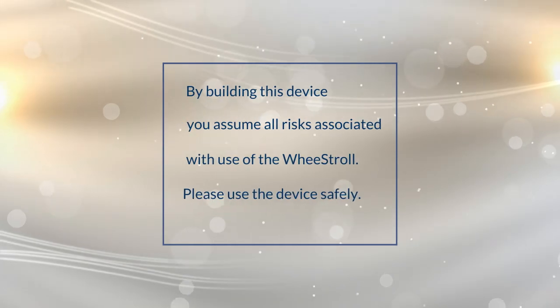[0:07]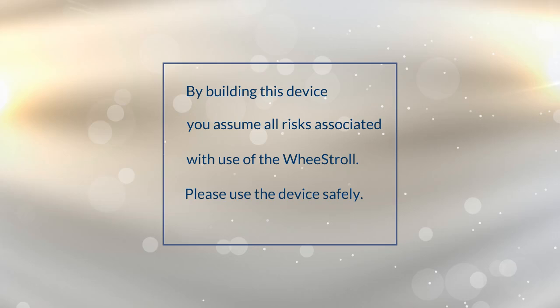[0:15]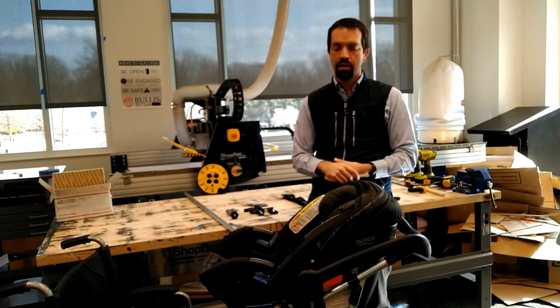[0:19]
Hi there. In this video, I'm going to show you how to build one of these. This is a wheelchair stroller adapter that I designed and built with my students.
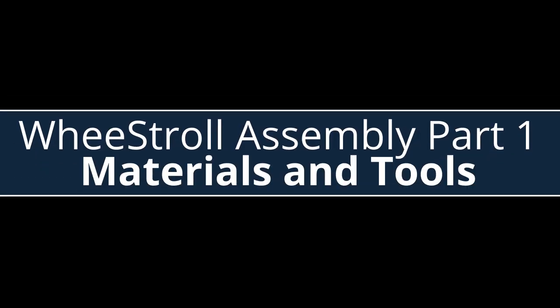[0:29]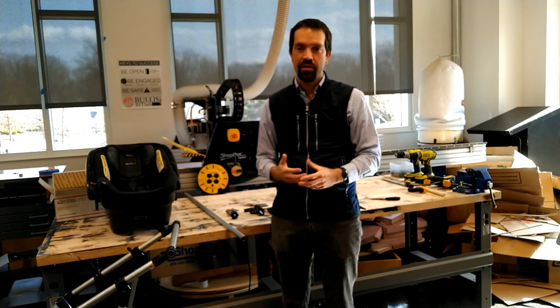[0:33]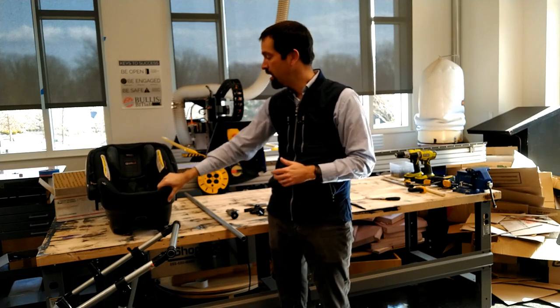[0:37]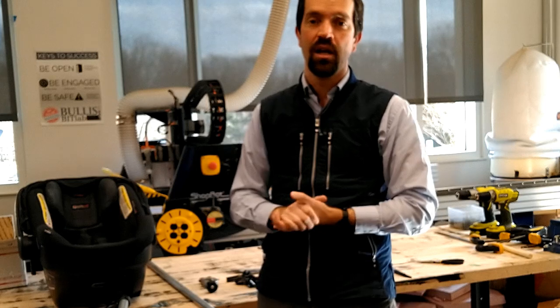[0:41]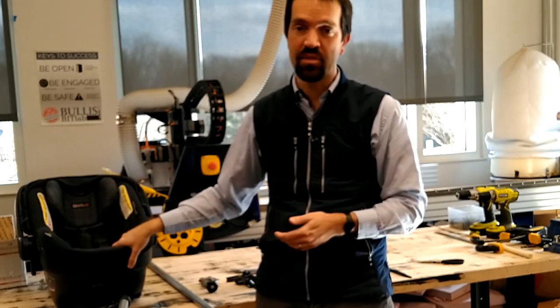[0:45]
For this project, you're going to need a few things. First thing that you're going to need is an infant car seat. The car seat that we are using is a Britax. We actually know that you can go to your local fire department, and lots of times they have extras of these that they can donate to you.
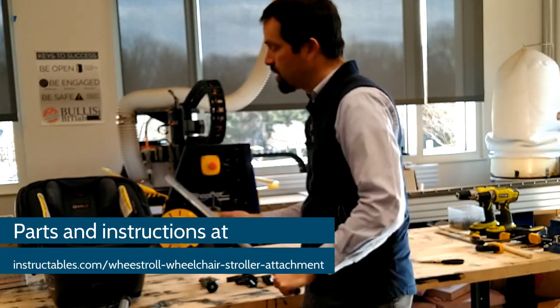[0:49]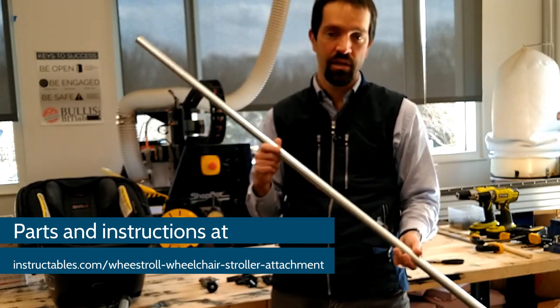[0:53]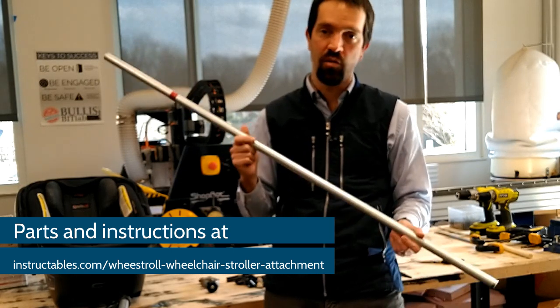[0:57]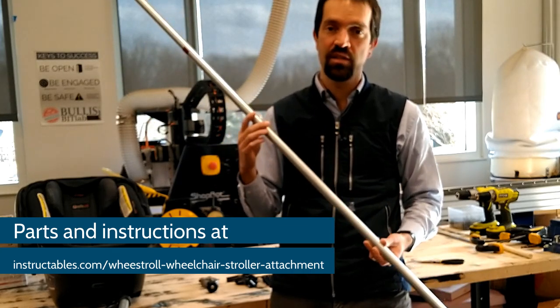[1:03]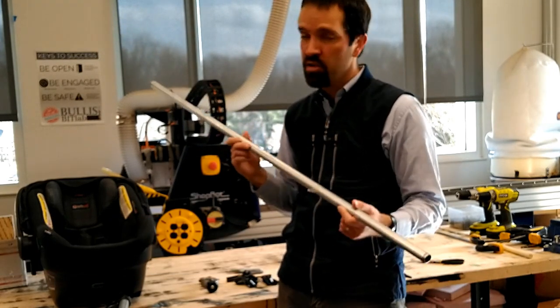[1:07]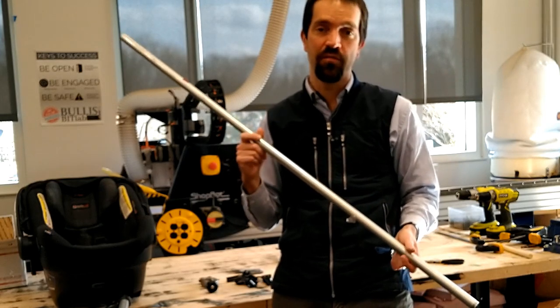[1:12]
You're also going to need some 3/4 inch EMT conduit. This is very cheap metal tubing that you can buy at Home Depot or Lowe's or other hardware stores. You will need one 10-foot long piece of this, 3/4 inch, and that's about $7.50. And you will also need a 1/2 inch piece. They come in about 5-foot segments, and those are about $5.
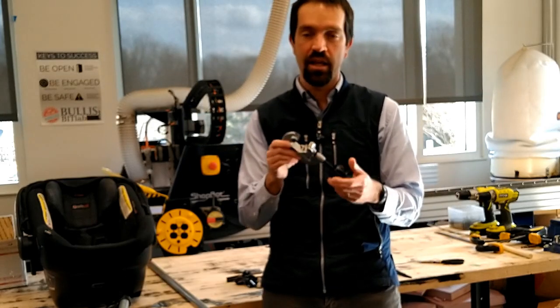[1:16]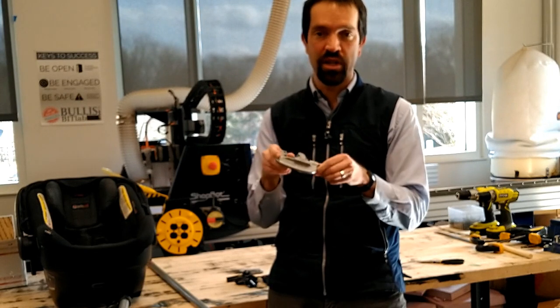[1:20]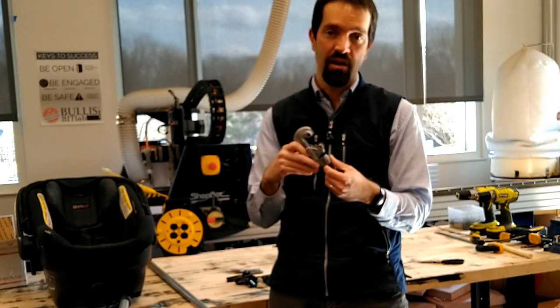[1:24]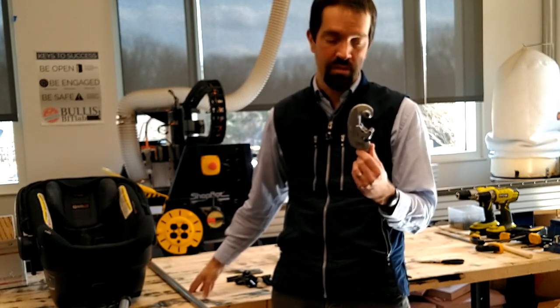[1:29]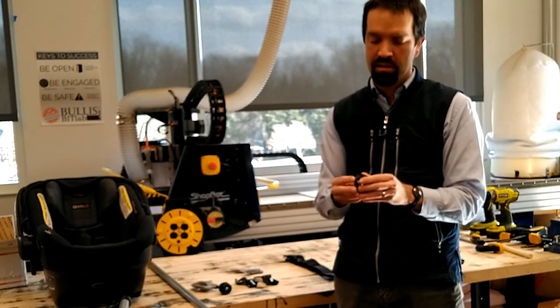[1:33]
You're going to need a conduit pipe cutting tool. This one is made by Ridgid. It costs about $25, and you can buy that in the hardware store in the same place where you can buy this, which is the electrical section. You're going to need some of these. We have a full parts list as well on our project page.
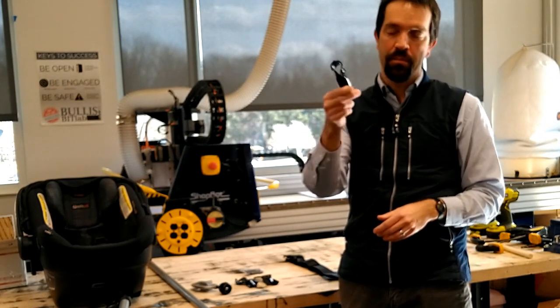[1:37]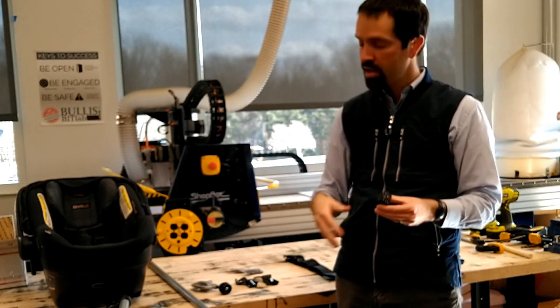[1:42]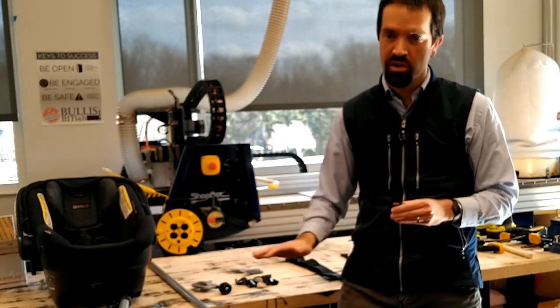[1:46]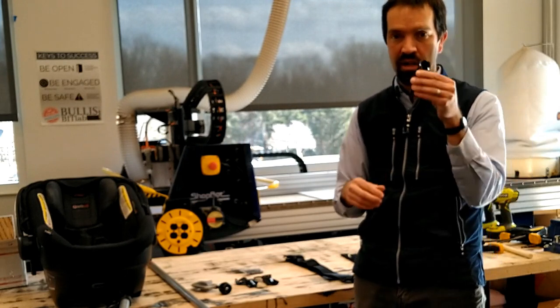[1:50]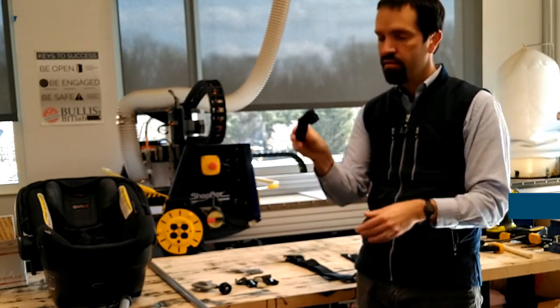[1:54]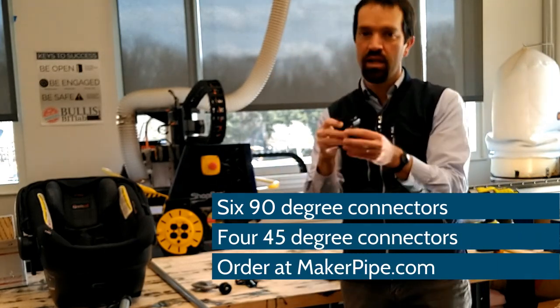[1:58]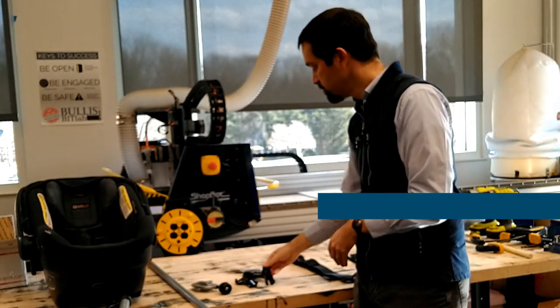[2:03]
This is Maker Pipe. Maker Pipe is a brilliant invention. It is a way of connecting parts of EMT conduit together to create structures, and that's what the majority of the structure is created with. You can buy these by the connection, and so we have a list of a certain number of 45 degree angles and 90 degree angles in order to build this entire project.
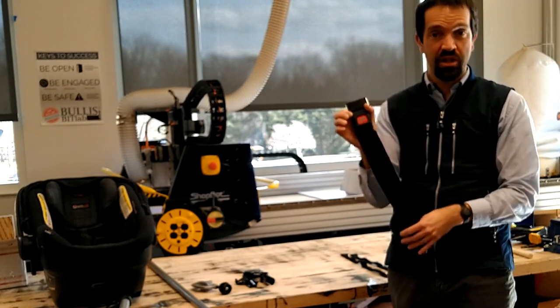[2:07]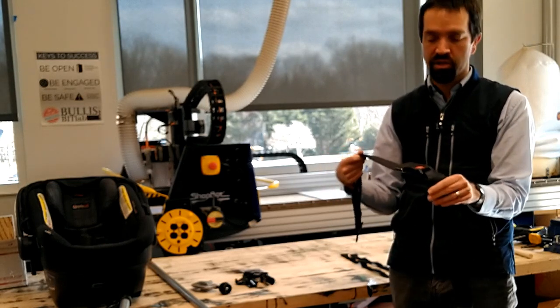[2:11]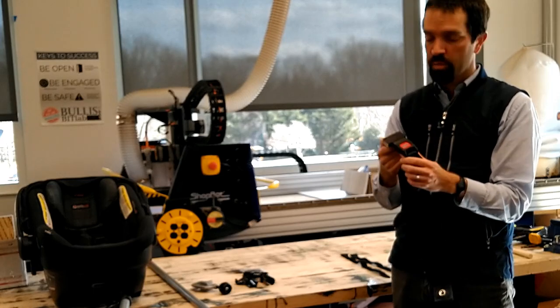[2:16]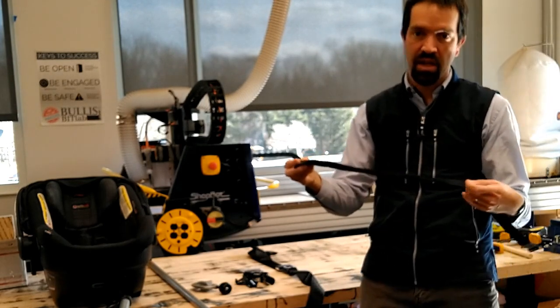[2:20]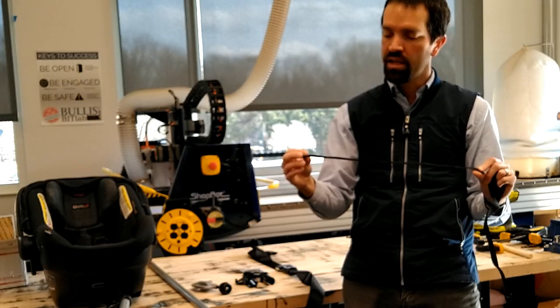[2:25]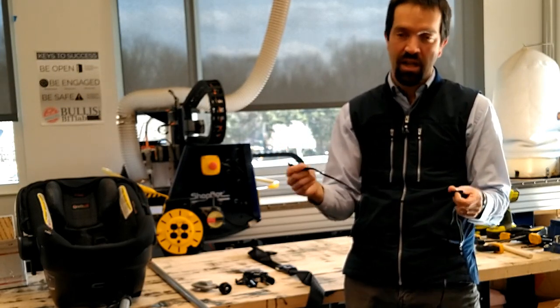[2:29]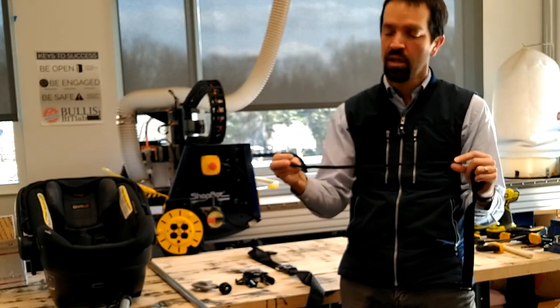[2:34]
We also have a wheelchair seat belt, which we're using for this project to help buckle the car seat onto the structure. This particular one is also linked on the project page and costs about $12. And we are also using some Velcro cable ties. These are 18 inches long, and the entire pack of 8 costs about $25. You can probably find these in smaller packs to save a little money, but they should be 18 inches long or longer.
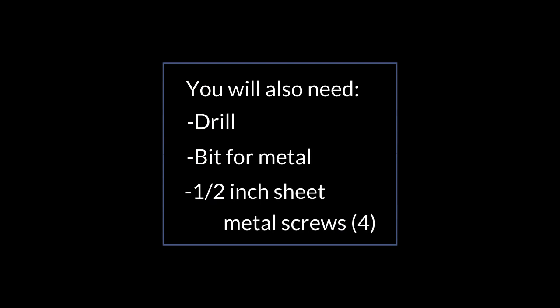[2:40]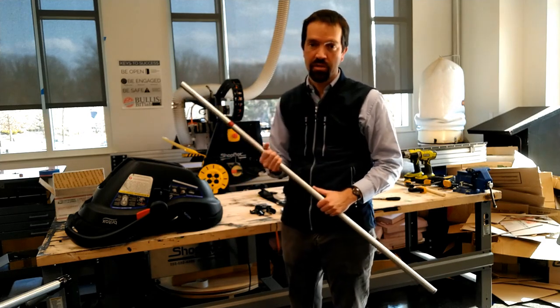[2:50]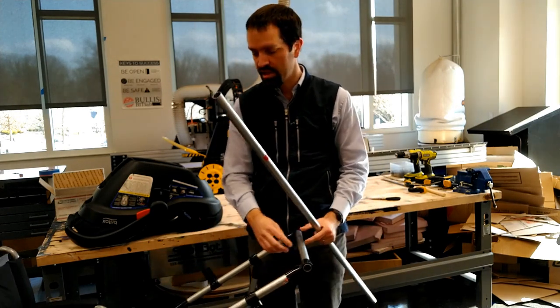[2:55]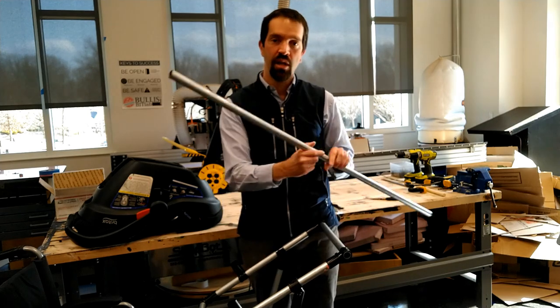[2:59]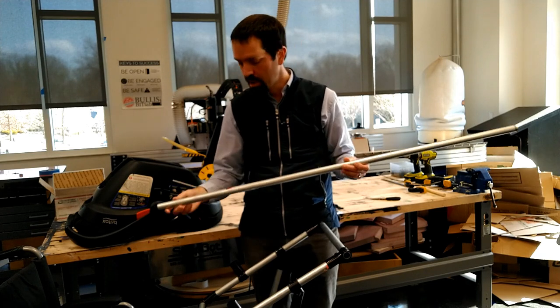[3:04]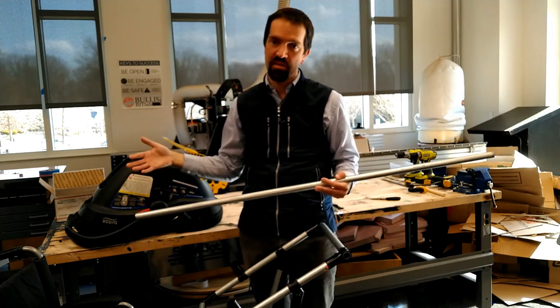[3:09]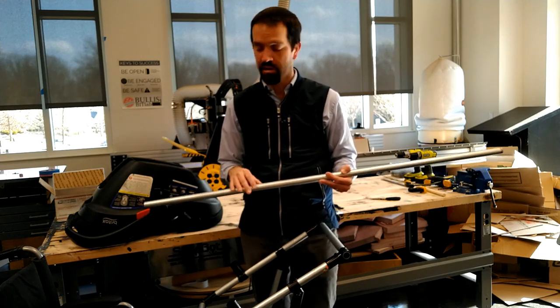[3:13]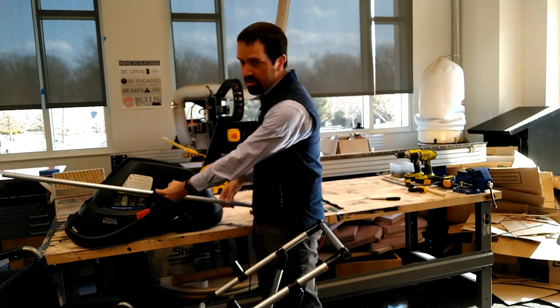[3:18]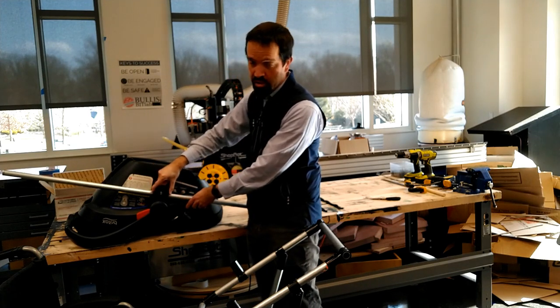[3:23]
So the first thing that you're going to do is build the structure. The top part, which is a rectangular structure that the car seat sits down into. And in order to do that, you're going to cut a few lengths of the EMT conduit. For this first part, you want to cut it a little bit long because different car seats may be a little bit different shaped, and that'll allow you to trim it down to size later. And what you're going to do is take your conduit and lay it into this groove right here of the car seat where it would attach to a stroller.
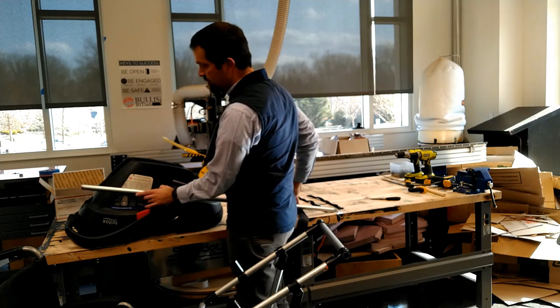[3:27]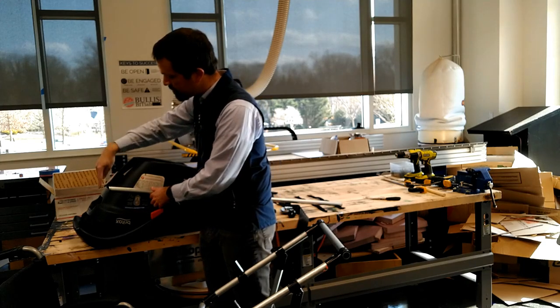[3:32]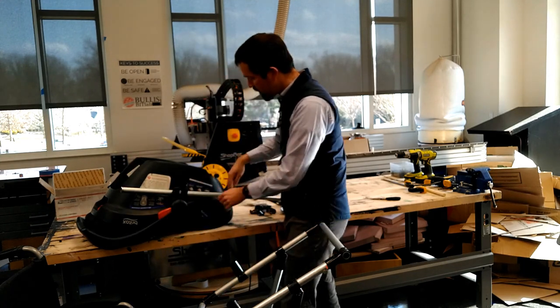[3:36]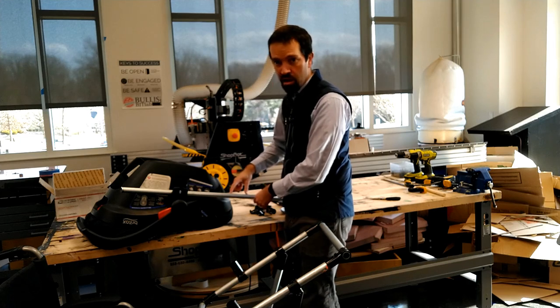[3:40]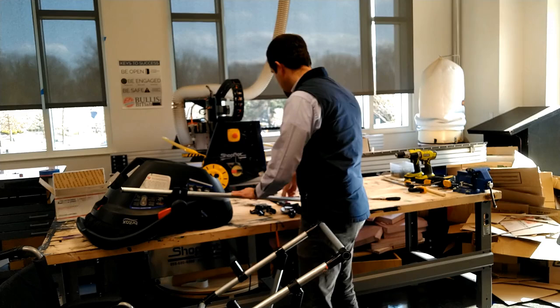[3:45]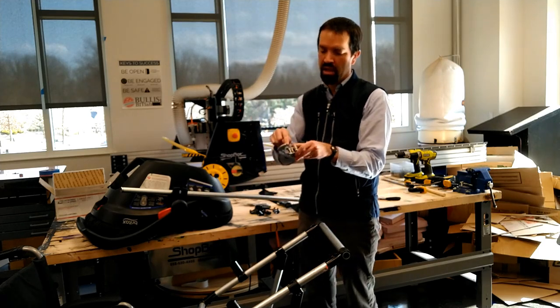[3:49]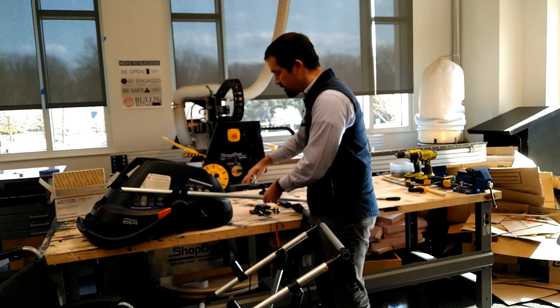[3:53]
And what we're going to do is slide it to the point where if we were to put a cross piece across the back of the car seat, we would also have a little bit extra at the front, because as I said, we're going to make this a little long and then we're going to cut it down. So this is the length that I want. I'm going to take my pipe cutter, which is simply a round metal blade and some rollers that can gradually tighten. And so once I have this,
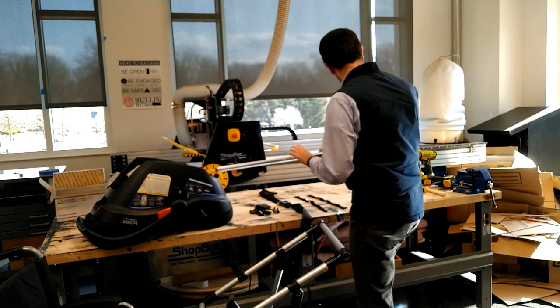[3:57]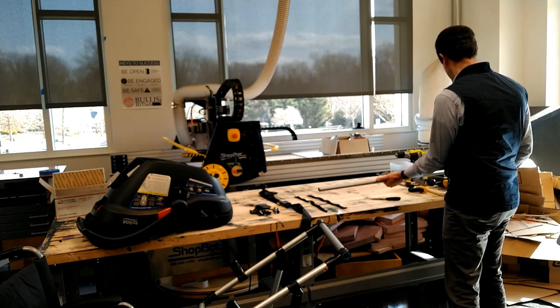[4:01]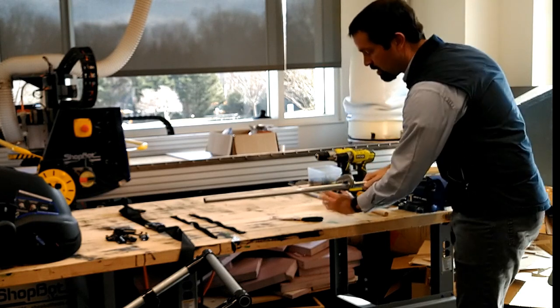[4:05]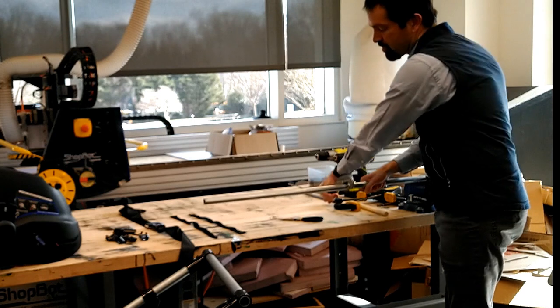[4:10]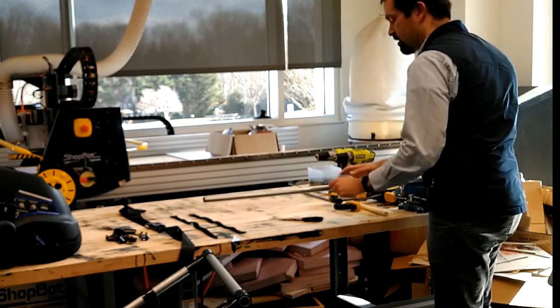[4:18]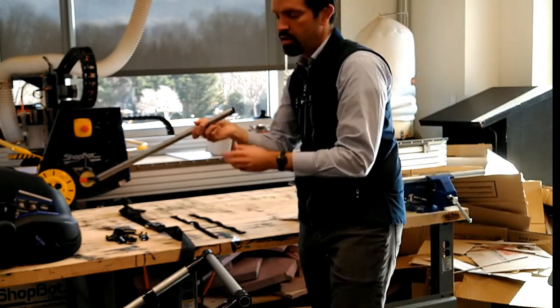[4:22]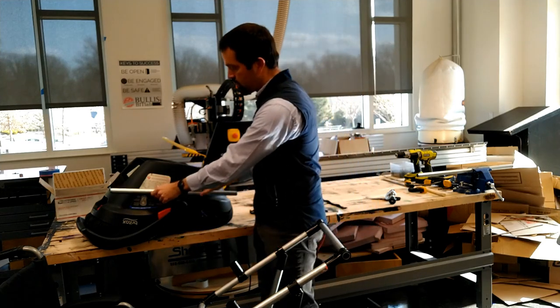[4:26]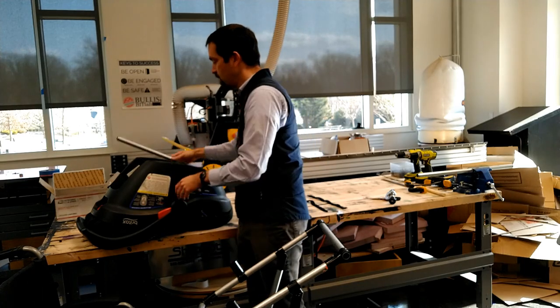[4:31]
You keep gradually tightening and spinning the tool. The pipe is cut. You're going to make two this length, one that will fit on the front of the car seat and one that will fit on the back of the car seat.
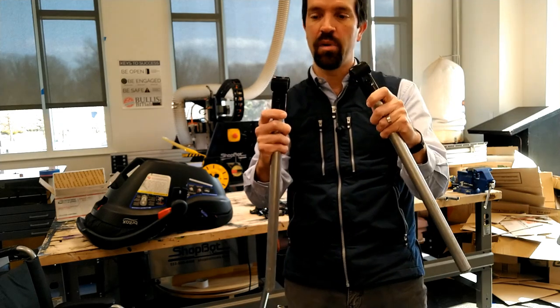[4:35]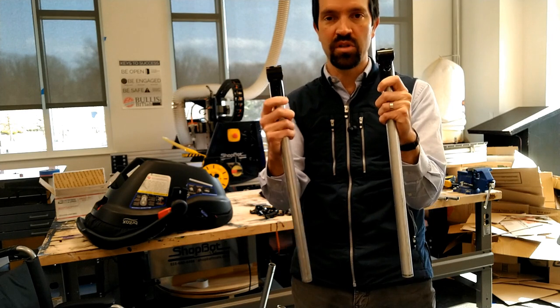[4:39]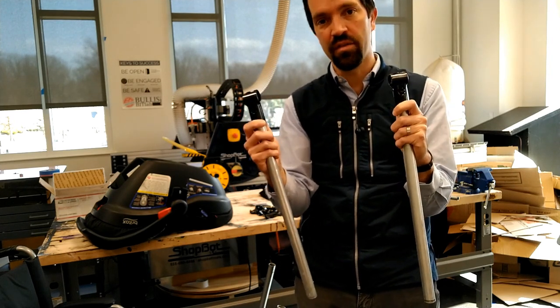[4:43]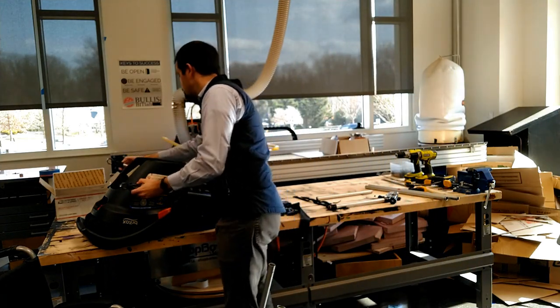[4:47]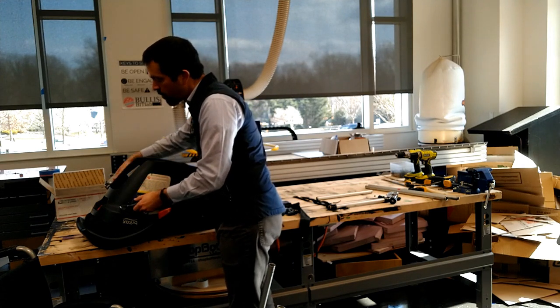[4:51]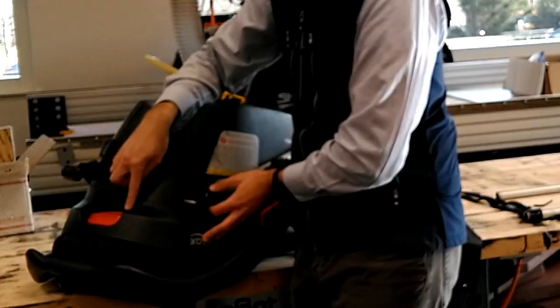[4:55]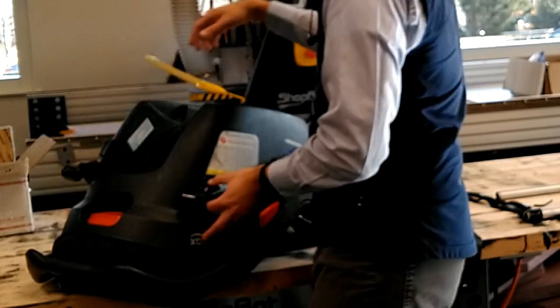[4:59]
So now that I have my two pipes, I'm going to put these T connectors on the end of those pipes, and we're going to use this to help us figure out how long the pipe at the back of the infant car seat should be. So I'm going to place both pipes into the slots. And what I want is for the back pipe to come right along this little ridge where the car seat would fit into the infant car seat base.
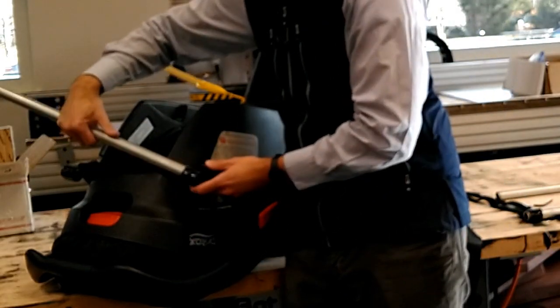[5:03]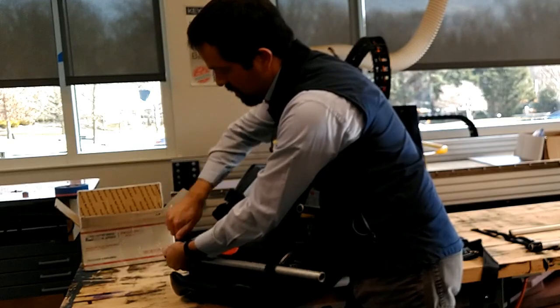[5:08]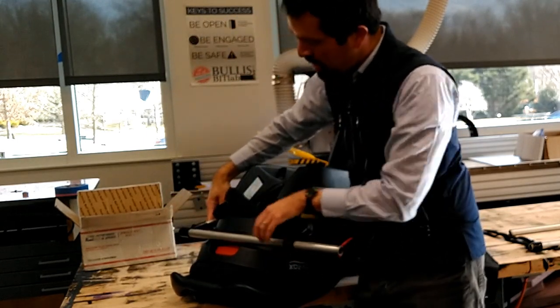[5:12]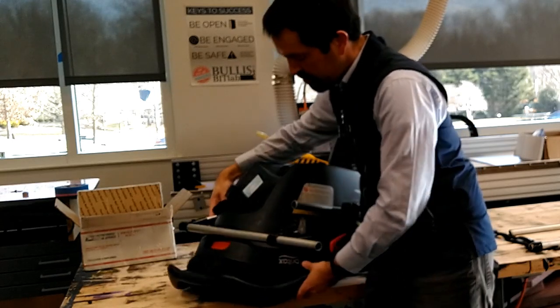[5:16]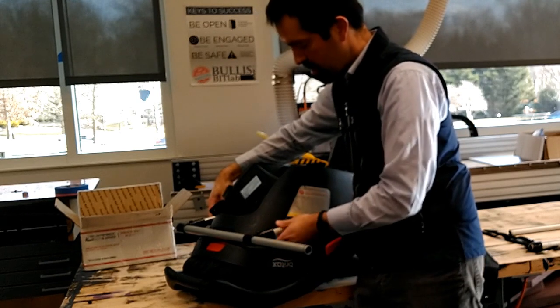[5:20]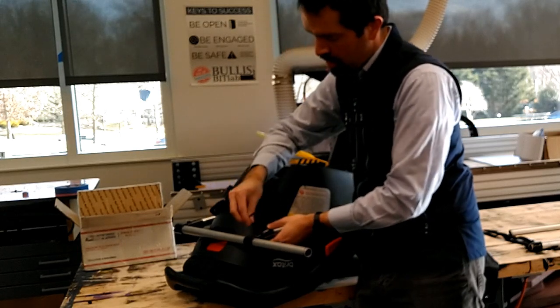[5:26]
And so I'm going to take one of my extra pipes here, and I'm just going to slide that through. And now I'm going to rest that bar right onto this ridge. And then I can slide this one to allow me to fit this pipe in.
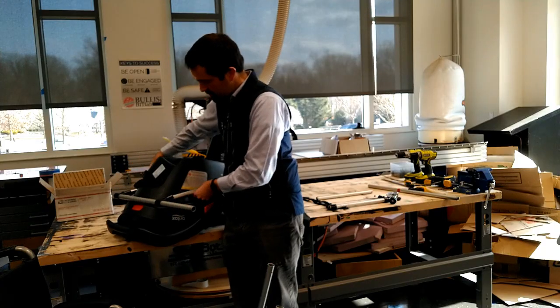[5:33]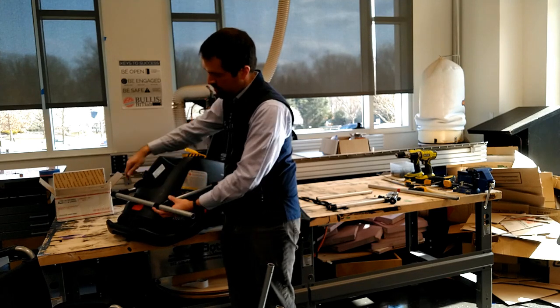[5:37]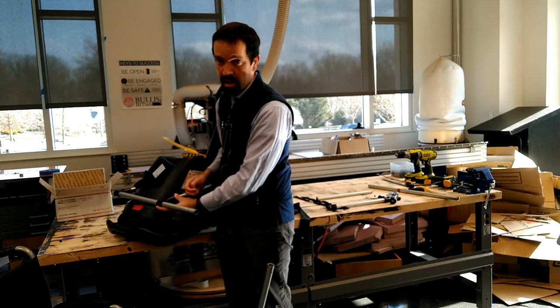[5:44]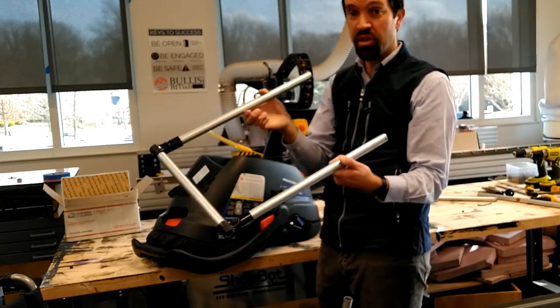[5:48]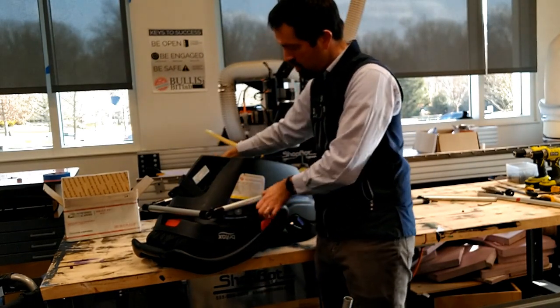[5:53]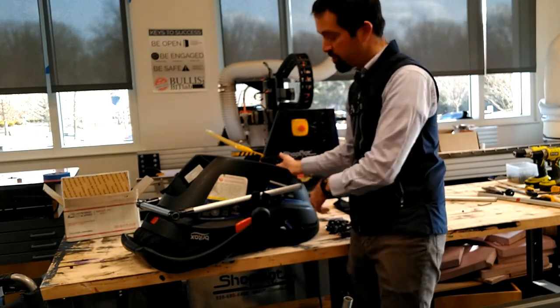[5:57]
So when that's all connected, it should make a nice secure connection at the back here with two 90 degree angles. Now I'm going to mark this pipe and I'm going to cut it at that length. So now I have three sides of my rectangle and it fit nicely here with a little bit of an angle. And now I need to make the adjustment for the fourth side of my rectangle.
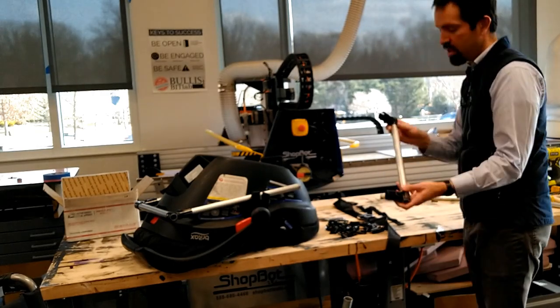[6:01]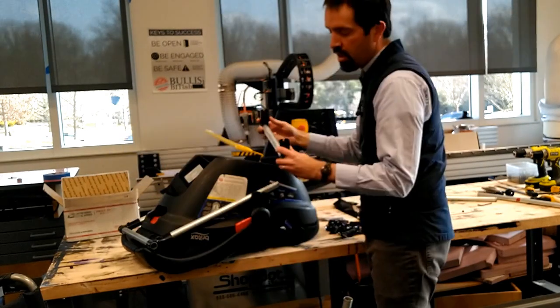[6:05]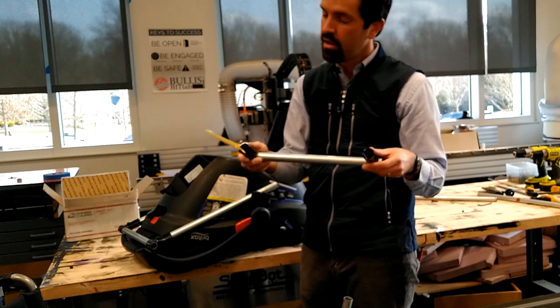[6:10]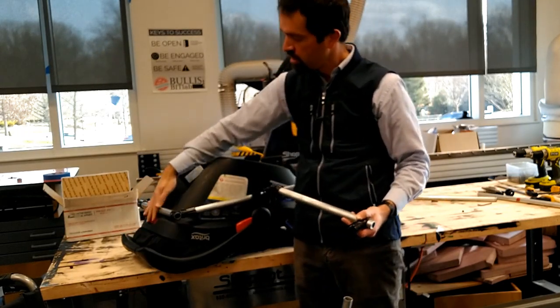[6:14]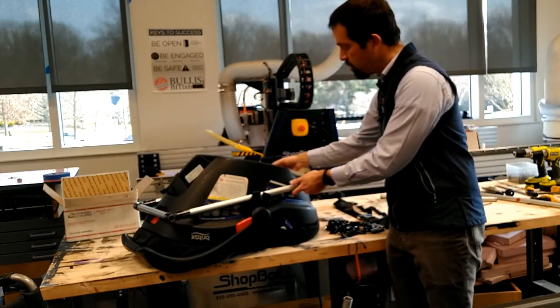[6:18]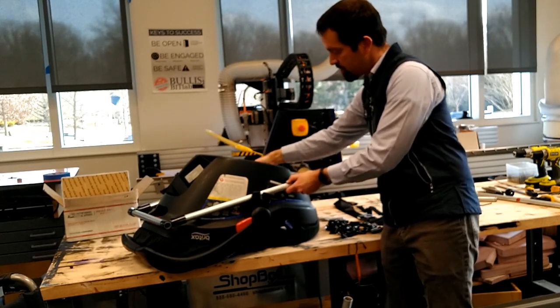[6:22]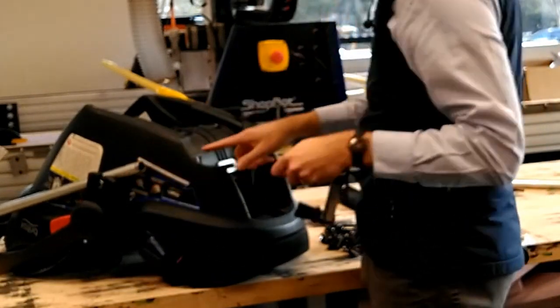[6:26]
And you can see I cut another pipe the same length as the one at the back. You have a little bit of wiggle room inside of the maker pipe to slide it, but you don't have a ton. So it's important once you've made this piece at the back that you get pretty close to an accurate measurement so that this piece sits on this other ridge at the front of the infant car seat so it has a stable platform.
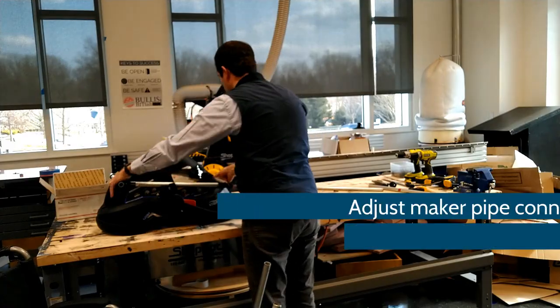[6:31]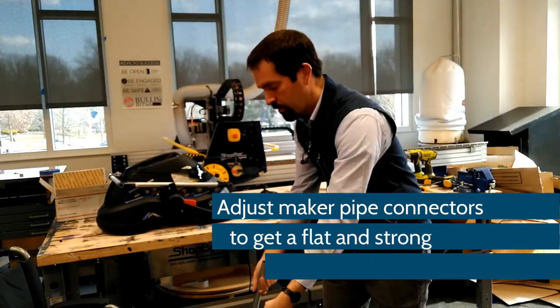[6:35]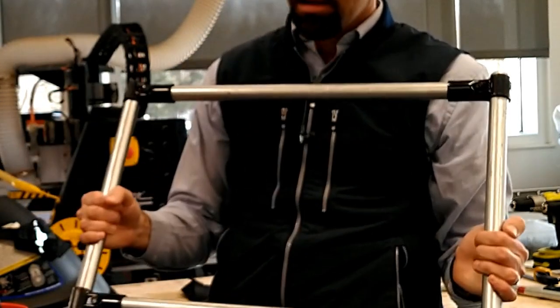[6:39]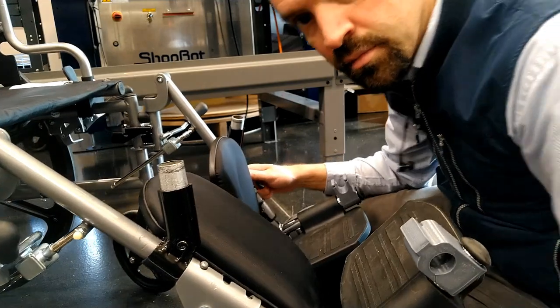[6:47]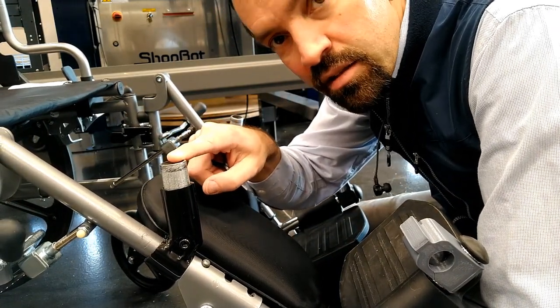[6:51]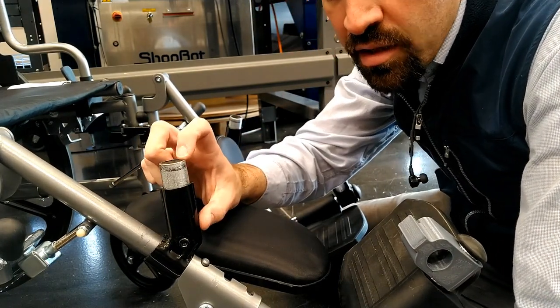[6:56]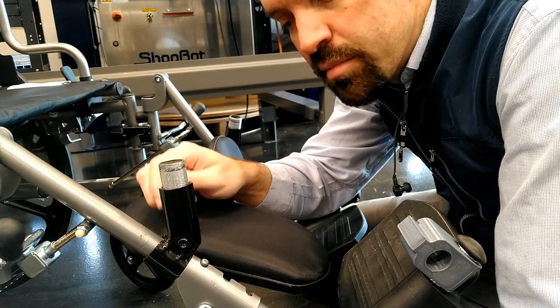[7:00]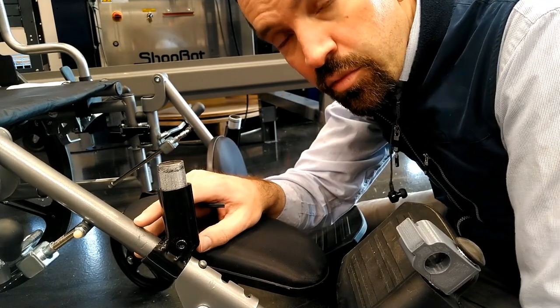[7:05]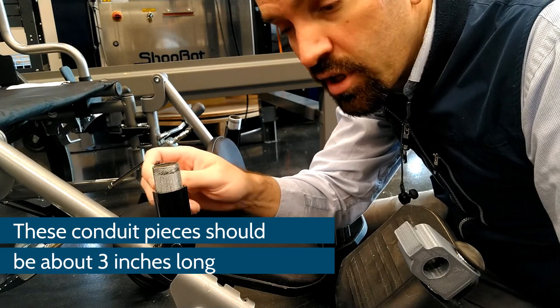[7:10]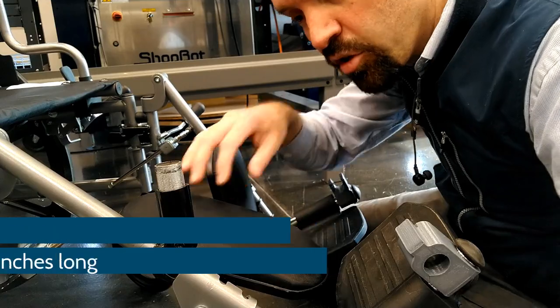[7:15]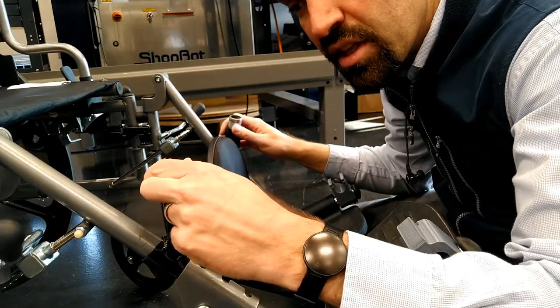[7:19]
Now the next thing that you're going to need to make is the base that the structure fits into. And this is very similar. This is simply a short piece of EMT conduit that goes into one of the maker pipe connectors, the 45 degree connector, and it actually clamps directly onto the footrest of the wheelchair itself. So you can take a little scrap of your conduit and you can pop it in there and you can tighten it down. You'll have to loosen it a little bit when you get everything adjusted, but you want it to be on there nice and secure so that this part doesn't slide out of the maker pipe.
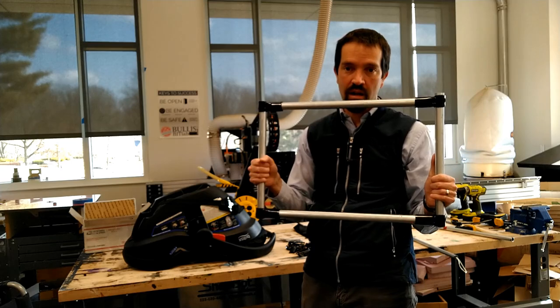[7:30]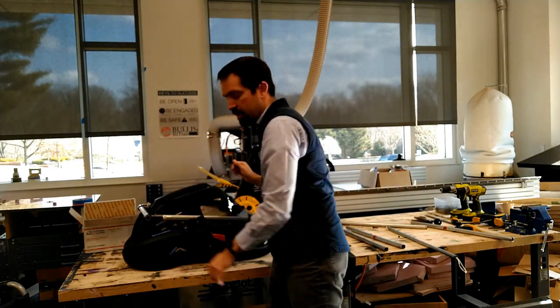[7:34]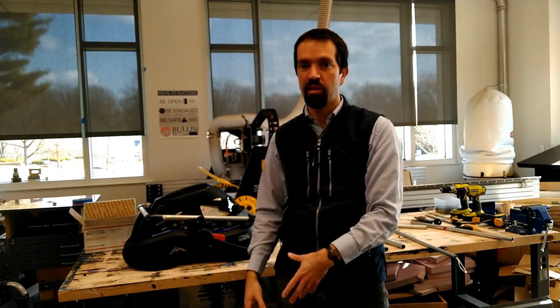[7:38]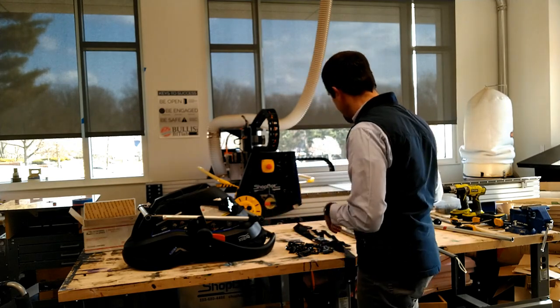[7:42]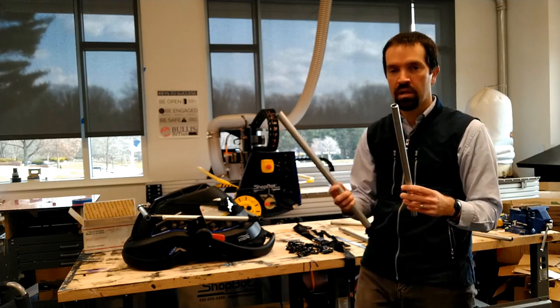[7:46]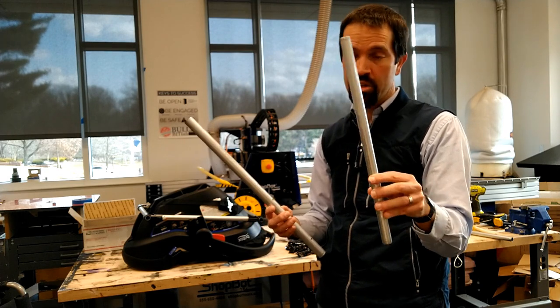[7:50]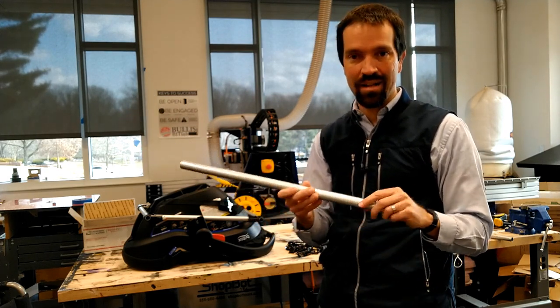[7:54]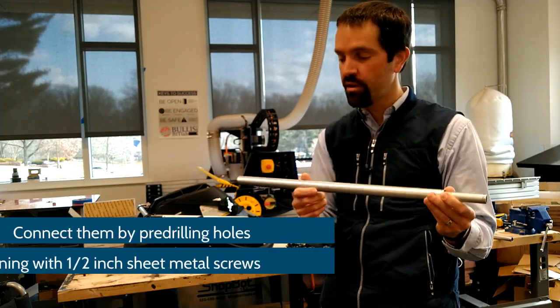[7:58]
So now that we've got our rectangular structure that sits on the infant car seat, and we also have the attachment point that goes onto the footrest of the wheelchair, we need to build the leg that connects the two things together. Now to build the leg, we're actually going to take a piece of the half-inch EMT conduit, and we're going to slide it up inside of the 3/4-inch EMT conduit, and we're going to drill those together.
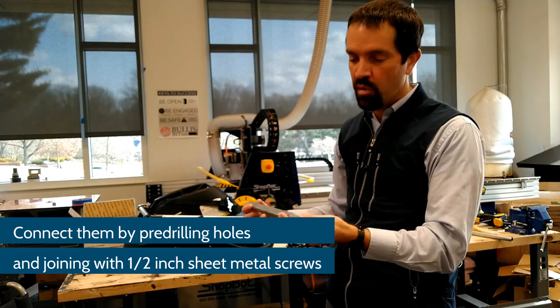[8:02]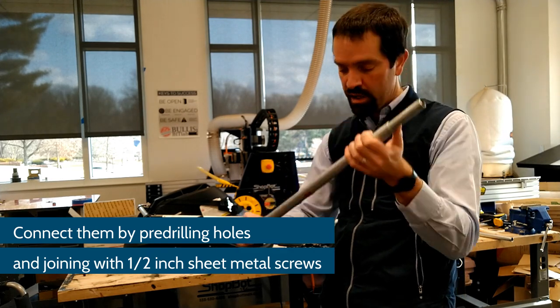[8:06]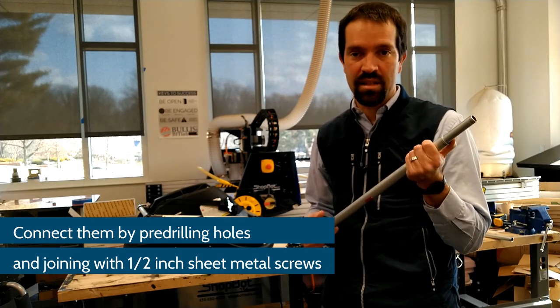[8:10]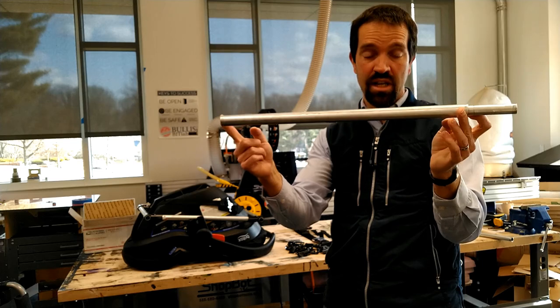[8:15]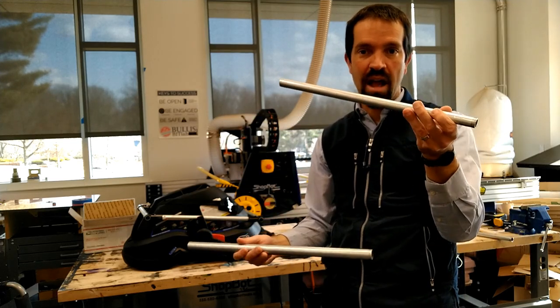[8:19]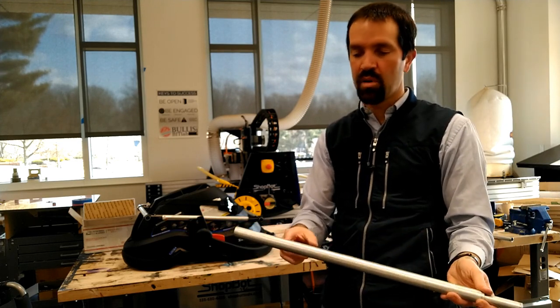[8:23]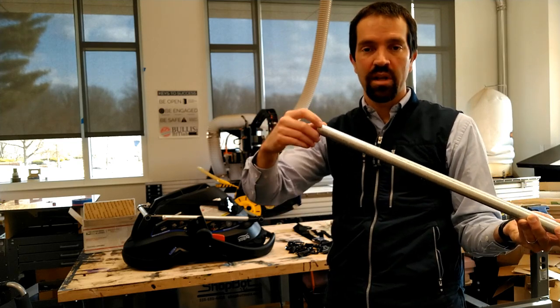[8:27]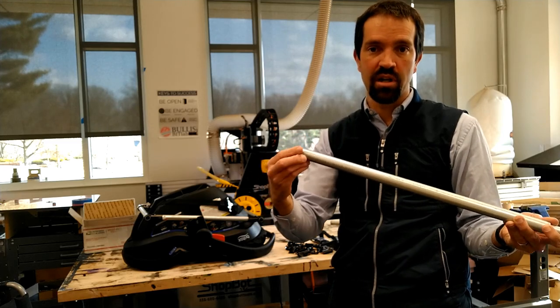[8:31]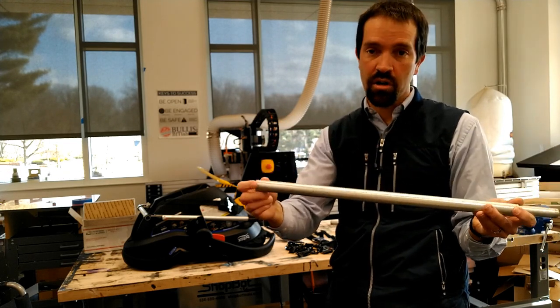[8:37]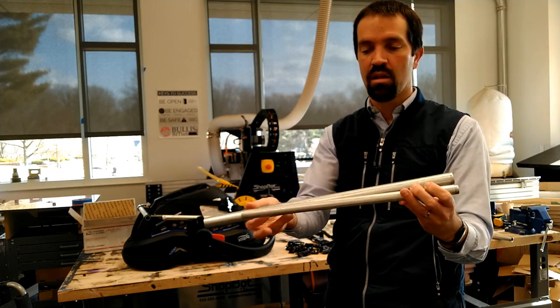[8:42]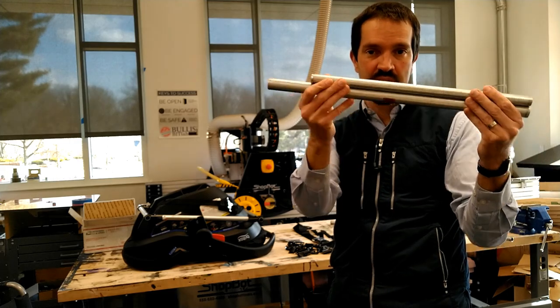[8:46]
The important thing to keep in mind here is that we want to make sure this end piece of half-inch conduit is as long as it can be in order to fit down into the base attached to the wheelchair. This 3/4-inch on our design is 19 inches long, and our half-inch conduit is almost that long. It probably comes about 4 inches short of the top. You can always trim off the top to make your design shorter. Different wheelchairs are going to take, and different people are going to need different heights, but 19 inches is a good place to start, and going about that long, 15 inches or 16 inches on the half inch pipe will work just fine.
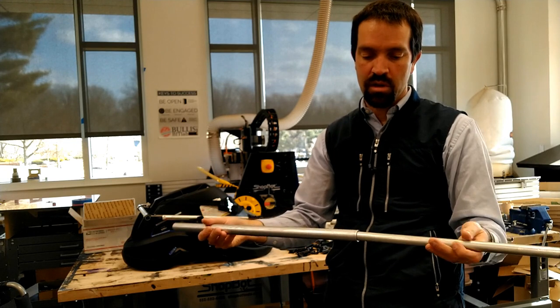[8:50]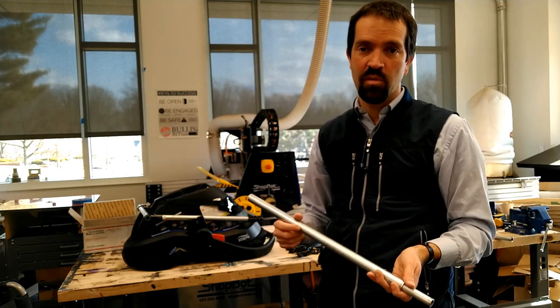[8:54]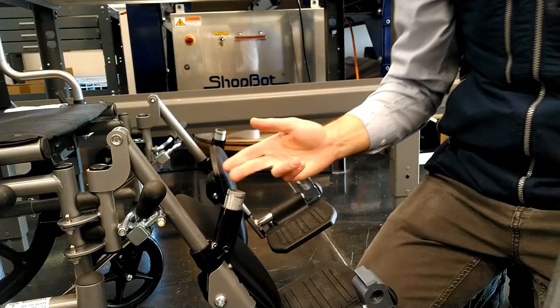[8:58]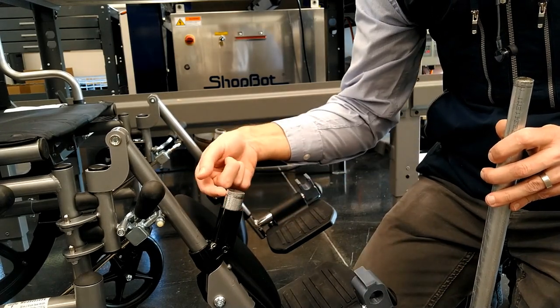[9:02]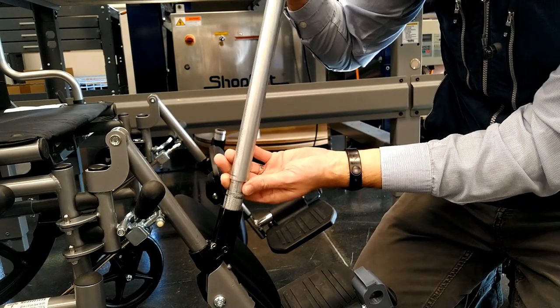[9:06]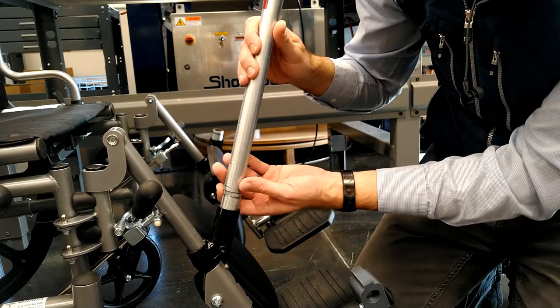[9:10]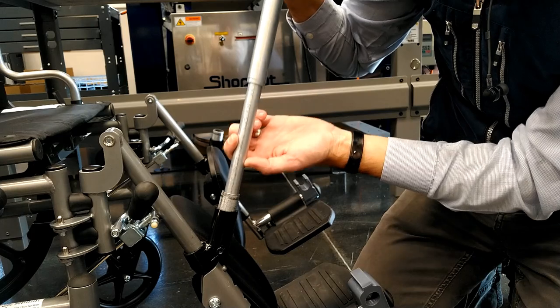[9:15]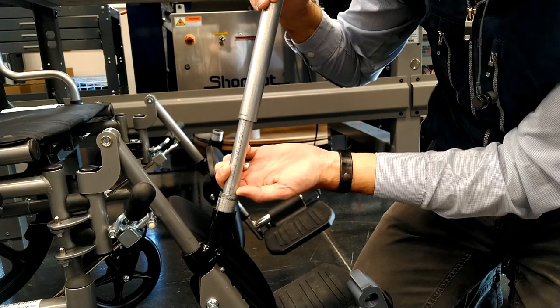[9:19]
So what we're going to do is slide that in there, and then we're going to use our attachment point at the base to make this stick out as long as it needs to. So here is my 3/4-inch tubing. It's sticking an inch out from the top of my maker pipe. And when I place this in here, that's going to go down that distance. I want to make a mark on my half inch tube showing how deep it can go in so that it gets the best, most stable connection.
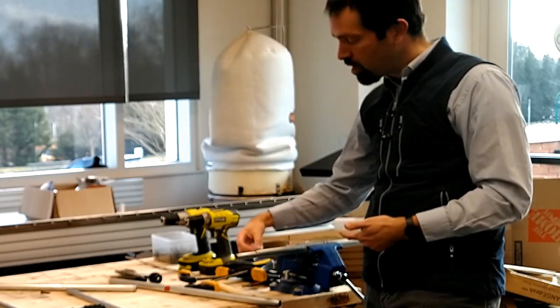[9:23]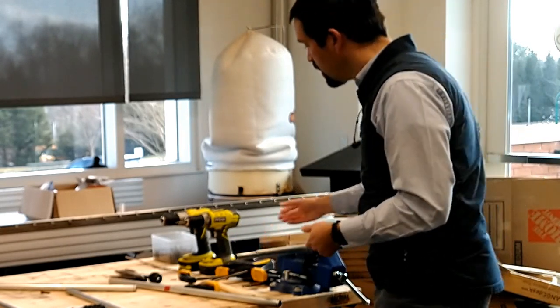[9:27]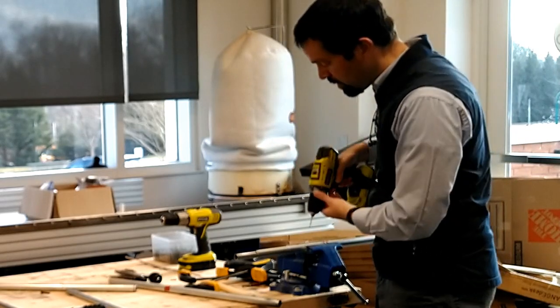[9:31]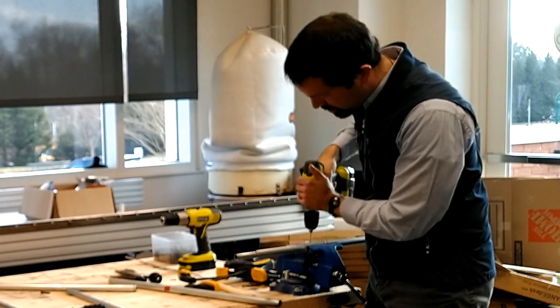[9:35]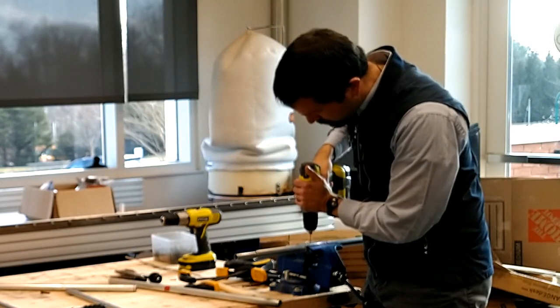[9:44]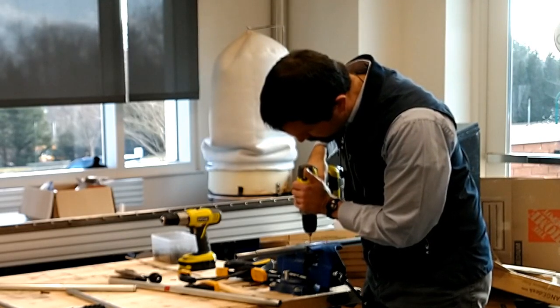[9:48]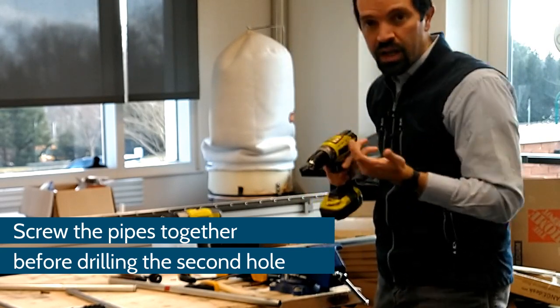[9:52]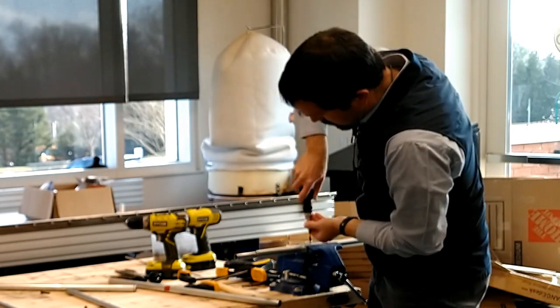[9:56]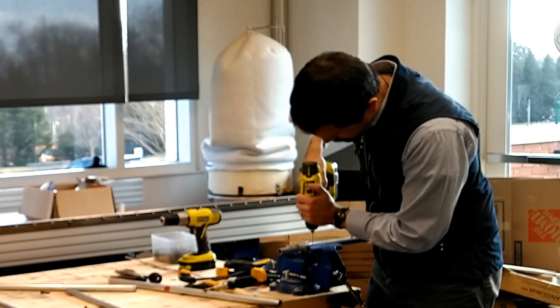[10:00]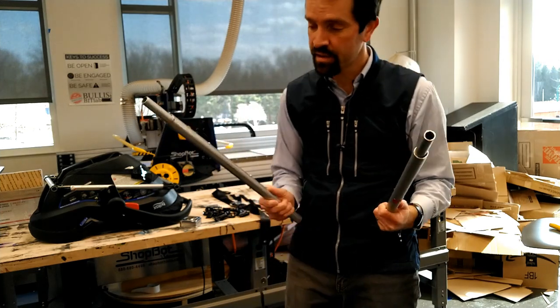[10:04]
Now that I have my pipe marked and I can line that up with the bottom of the 3/4-inch tubing, I'm going to take a drill and I'm going to go slow because I'm drilling through metal. And I'm going to slowly work my way through both pipes. And I'm going to do that at 2 points. So now I have my two legs.
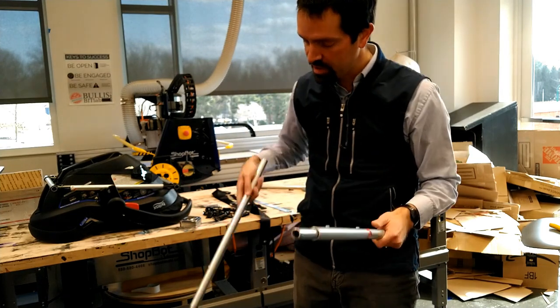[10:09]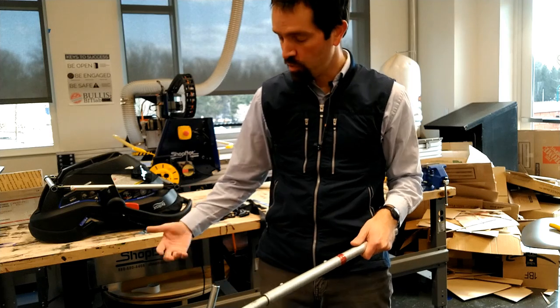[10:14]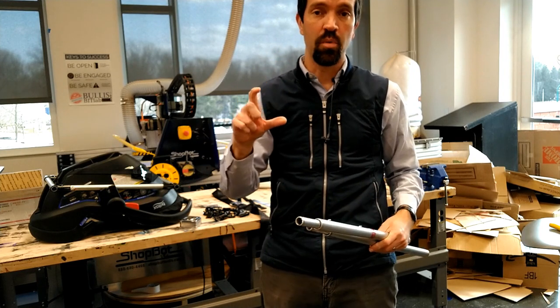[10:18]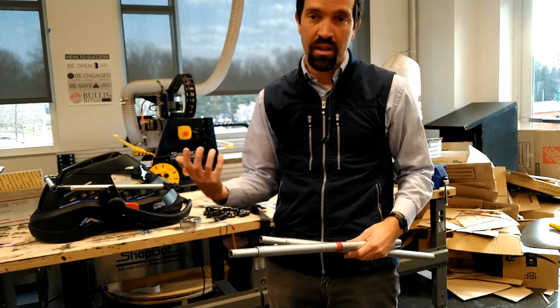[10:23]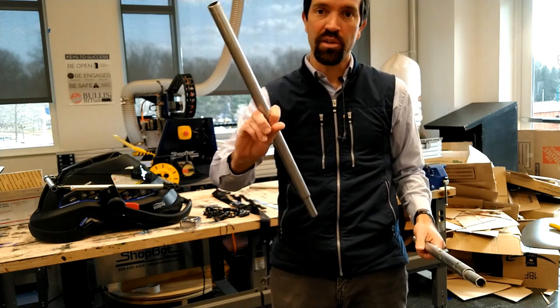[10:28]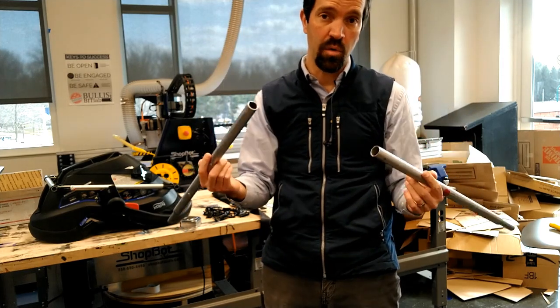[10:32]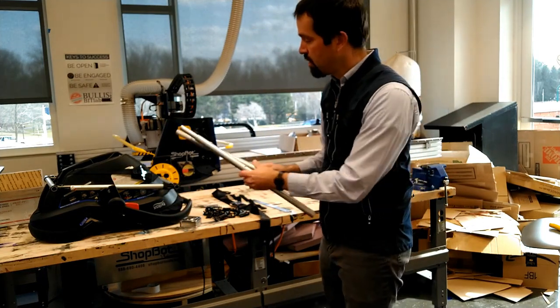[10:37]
These particular legs have a total measurement of 21.5 inches, and they slot down nicely into my connectors on the wheelchair without leaving a gap. Depending on the length of the attachment point that you made on your wheelchair footrest, the part that goes on there, your legs might be a little bit different, how high you want it to go. As I said, we can always trim a little off the back of these two legs if we find that it's too high and we want to shorten it. It's completely adjustable. But now we need to attach these on to this.
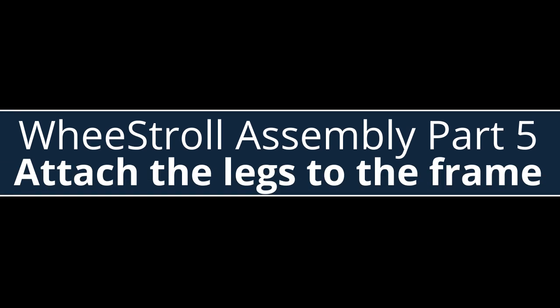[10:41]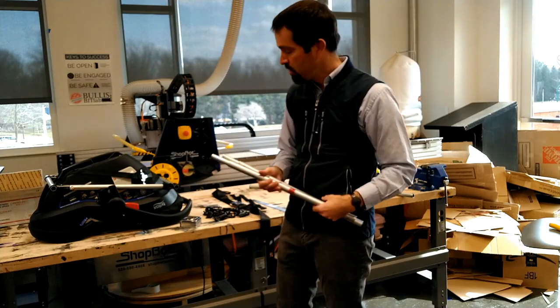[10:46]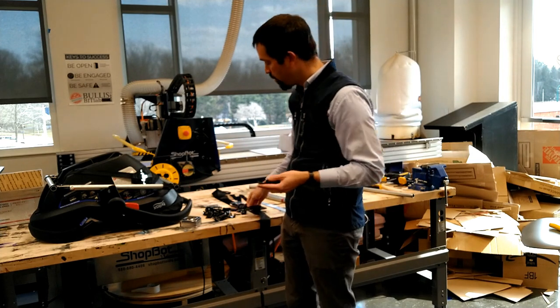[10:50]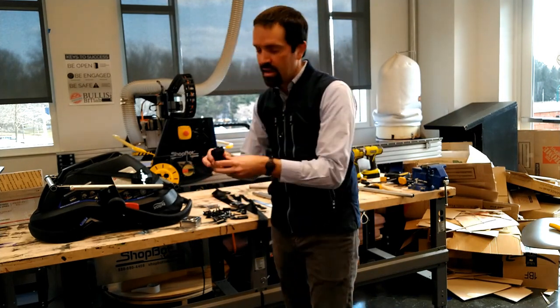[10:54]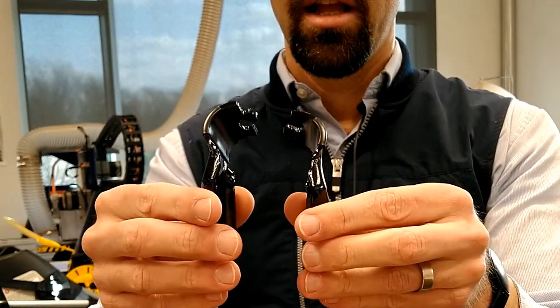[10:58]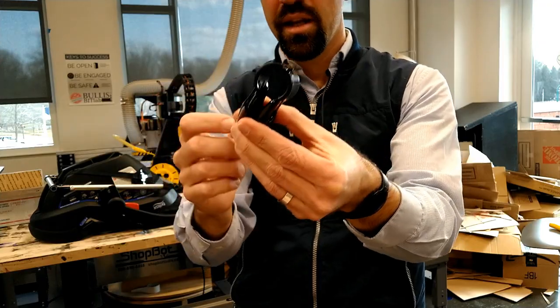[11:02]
In order to do that, we're going to use the 45 degree angle connectors of the maker pipe. And so the way they work is basically the same, except you'll notice that they are mirror images of each other. And so you have to find two that pair together to create that connection there, and then the opening for the pipe to go in there.
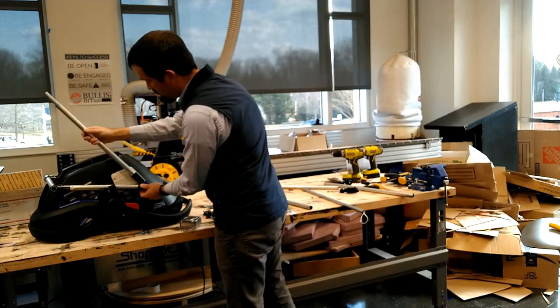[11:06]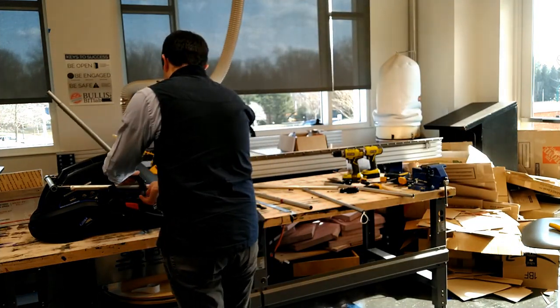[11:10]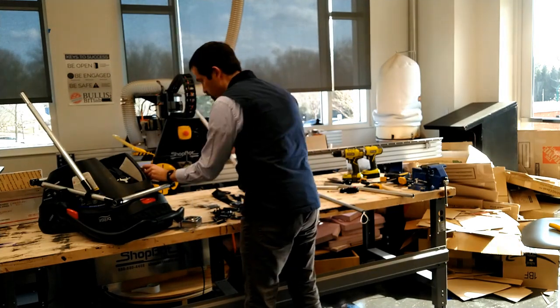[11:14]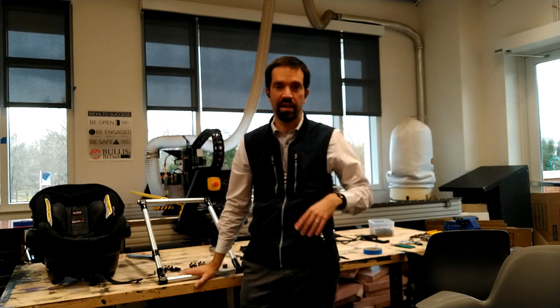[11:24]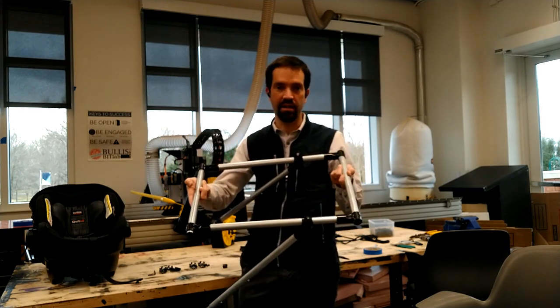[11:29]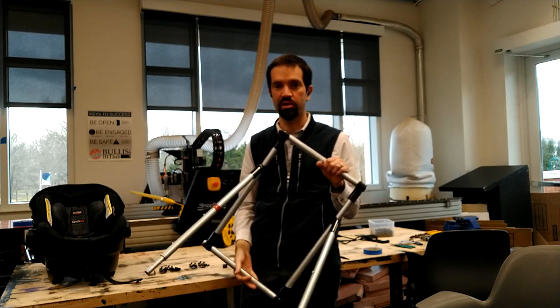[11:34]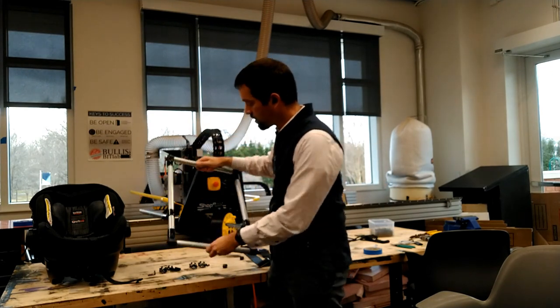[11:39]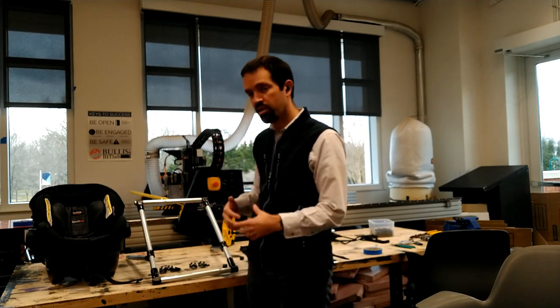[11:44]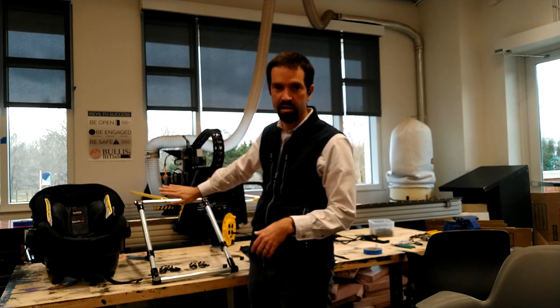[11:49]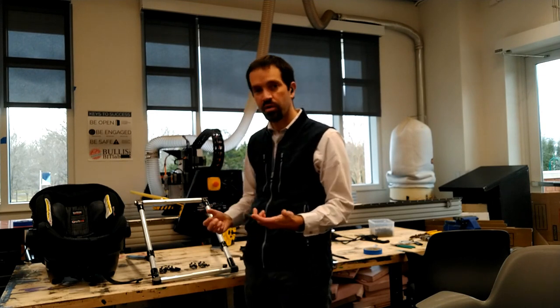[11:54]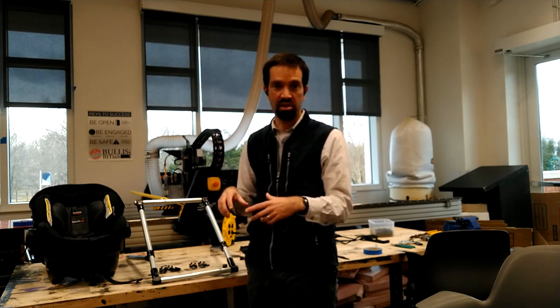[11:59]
So now that we've assembled the basic structure of the device, we have the rectangle that the infant car seat sits down into, we have our two legs that hold it up, and we have the two attachment points on the wheelchair itself. We're going to attach some safety mechanisms to this. The first thing that we're going to do is get two T connectors, maker pipe, and those are going to perform two functions. One, it's going to help keep the car seat from sliding down towards the wheelchair user, and it's also going to clamp a seatbelt in there that's going to help hold our car seat to the structure.
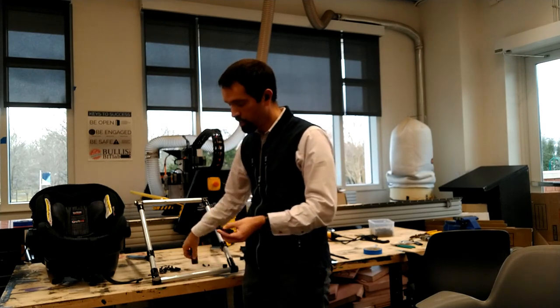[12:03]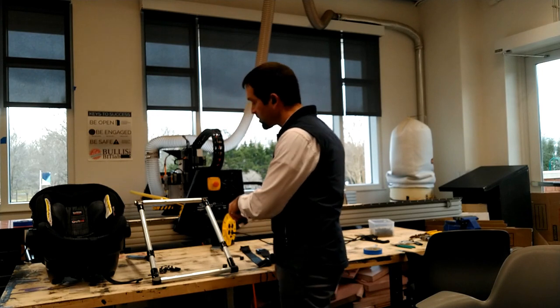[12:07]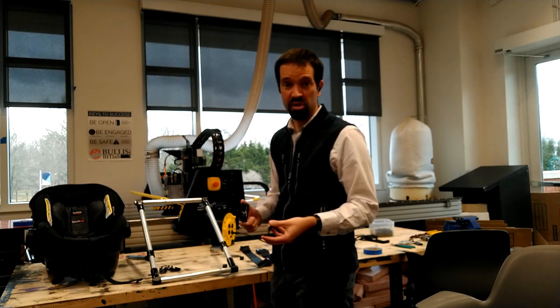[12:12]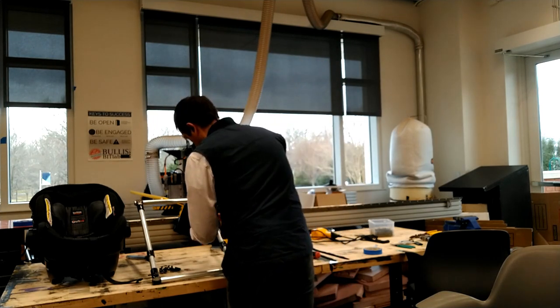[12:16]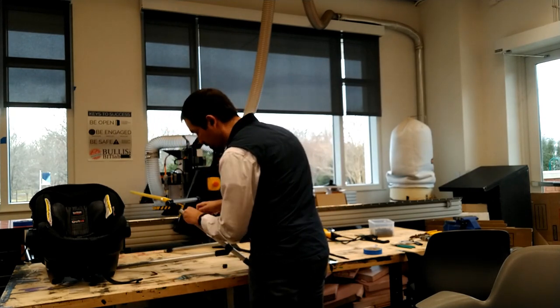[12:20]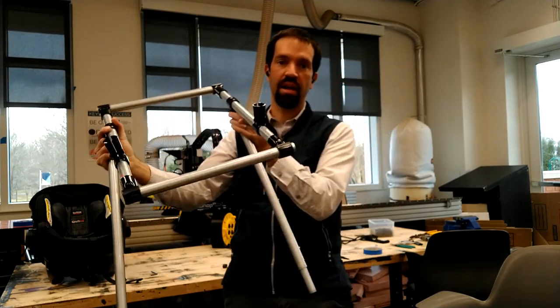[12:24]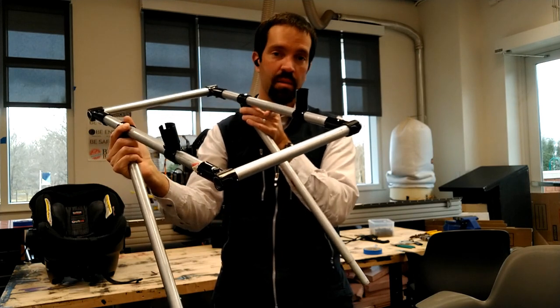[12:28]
So, again, two maker pipe attachments, and we're just going to put them on there, and then we're going to slide them to the proper position after we've got them on loose. So we have these T connectors placed. We're going to make sure that they are in the proper spot before we attach the seatbelt and lock them down.
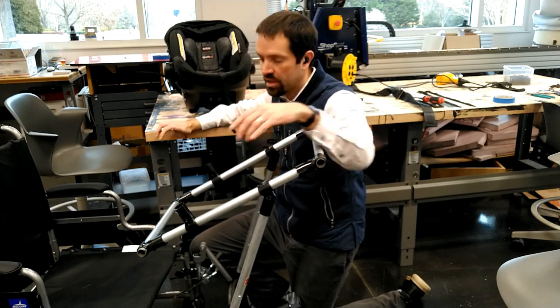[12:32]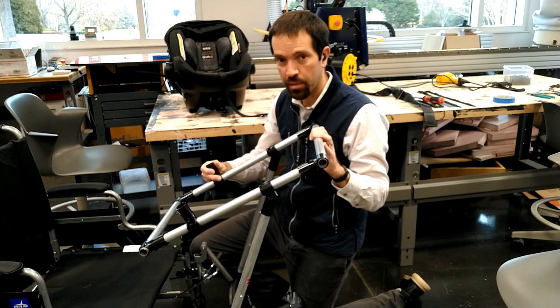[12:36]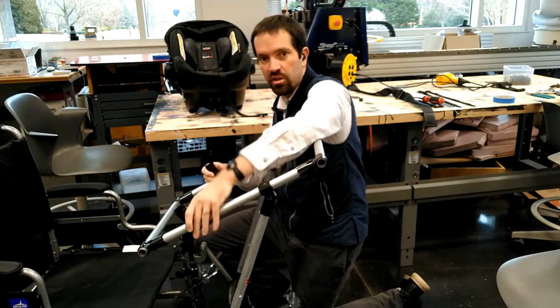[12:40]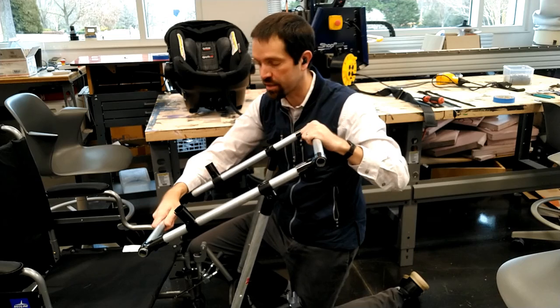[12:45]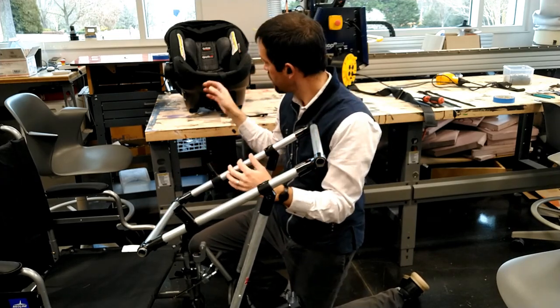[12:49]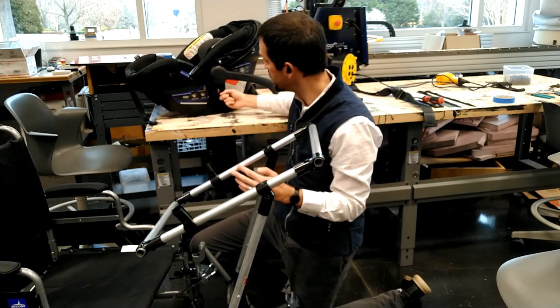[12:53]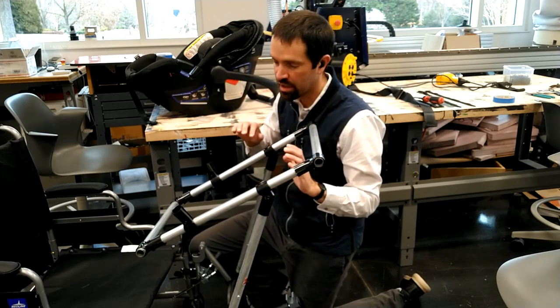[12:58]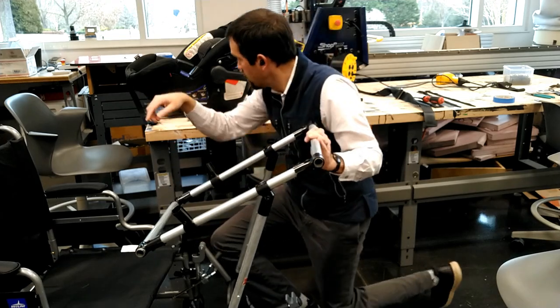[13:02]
So for this process, we're actually going to put the infant car seat into its cradle, and then we can move these and adjust them so that, one, they need to be spread out just a little bit so that they don't push the car seat up. We want to make sure the car seat makes good contact here. And then they also can be slid up and down so that the connectors for a stroller on our infant car seat actually will butt up against them, and that'll add a little bit of extra support as the wheelchair may want to slide forward.
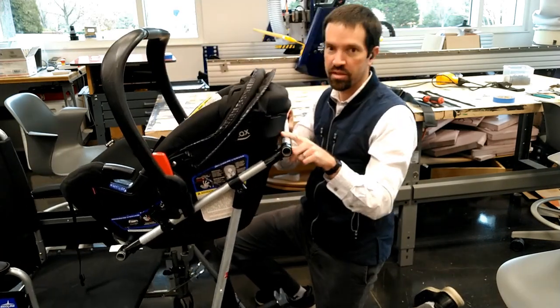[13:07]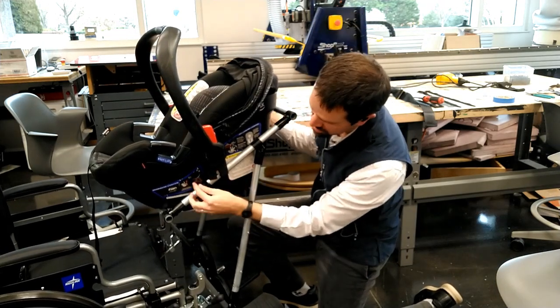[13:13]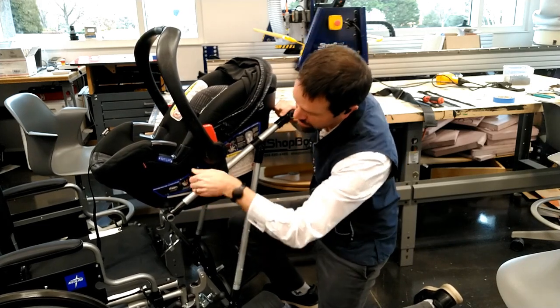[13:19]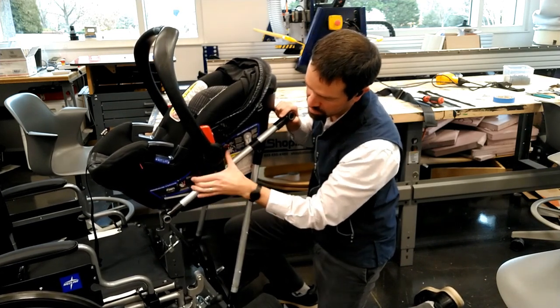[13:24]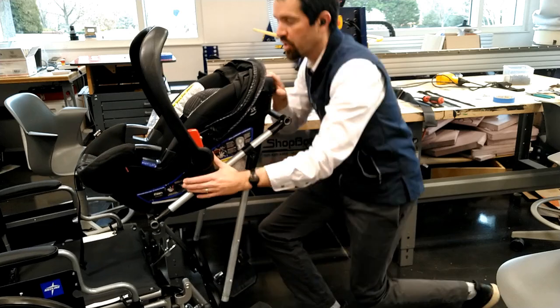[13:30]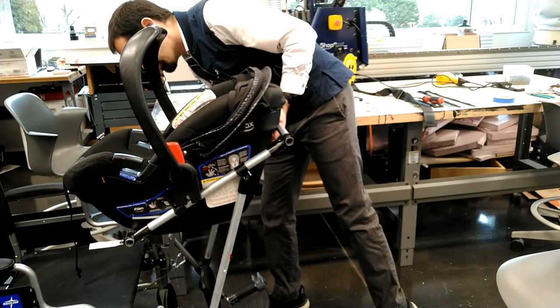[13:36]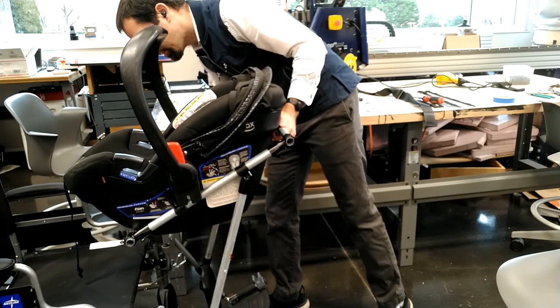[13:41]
So that the bar is coming along the back here and coming along the front here. Now you can see that I can adjust this bit of maker pipe here to slide it to where it'll add some support and tilt it so that it's not pushing the infant car seat up. I'm going to do that on both sides. And I'm going to tighten it down just a little so that it doesn't slide out of place. But not all the way. We still have more work to do with this.
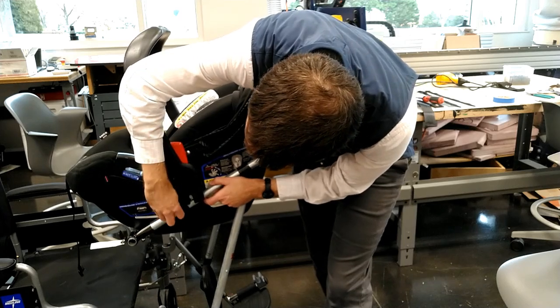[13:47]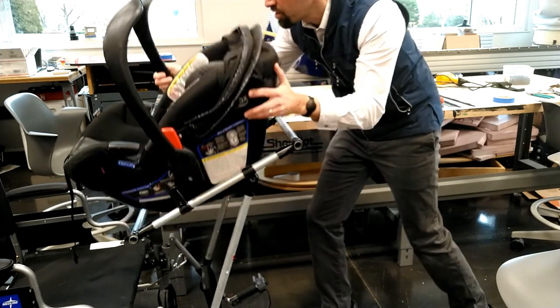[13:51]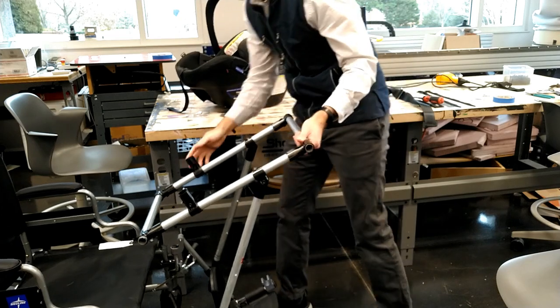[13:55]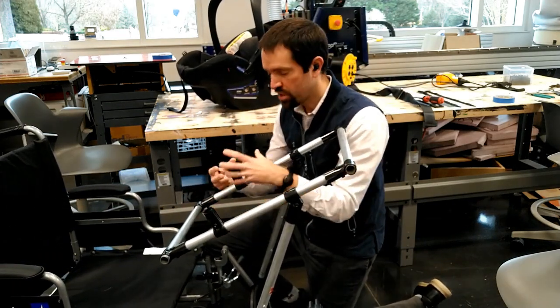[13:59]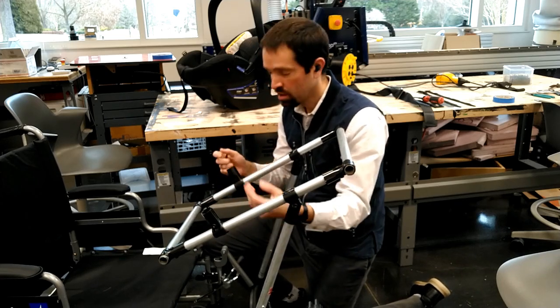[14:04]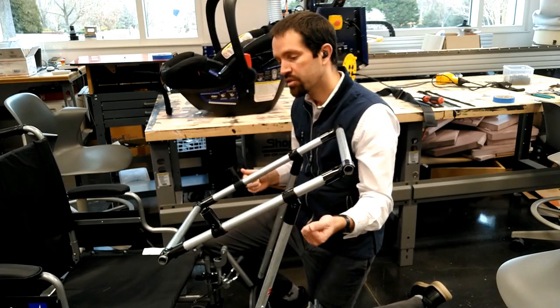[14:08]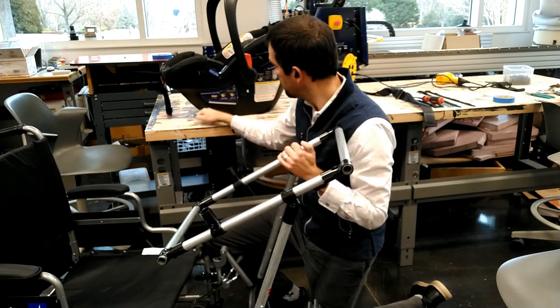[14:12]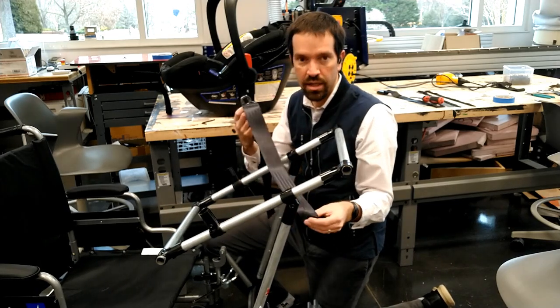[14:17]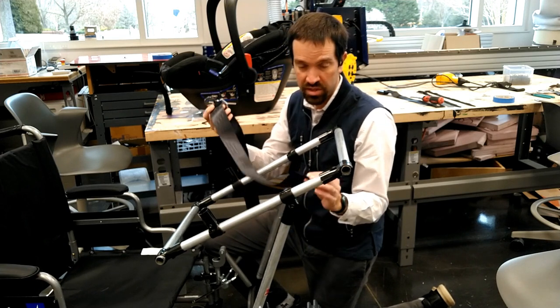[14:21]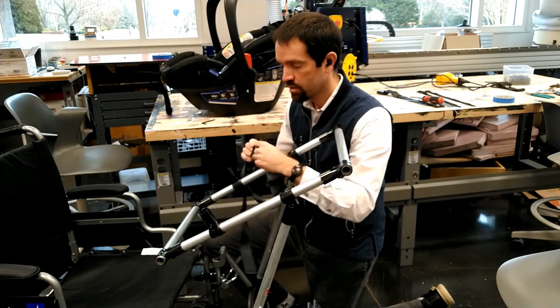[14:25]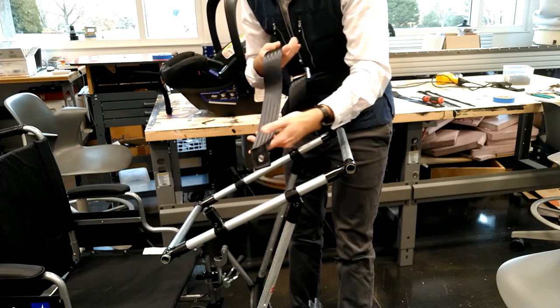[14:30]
All right. Now I'm going to take the car seat out. And here are our two supports. Now, we're going to use the clamping pressure of the maker pipe to actually hold our seatbelt, which is going to go through this belt path on the infant car seat so that you can actually belt the car seat onto the metal frame. So we have two parts. This is a wheelchair seatbelt that we bought on Amazon. It's about $10 or $11. And we're going to put this side over here. This can really go on either side, probably.
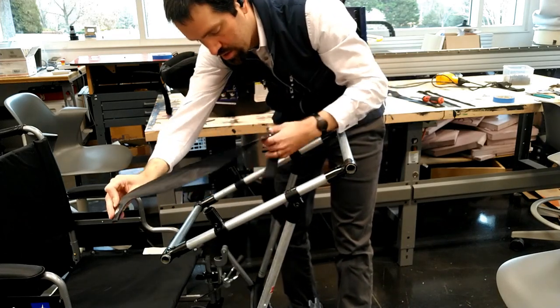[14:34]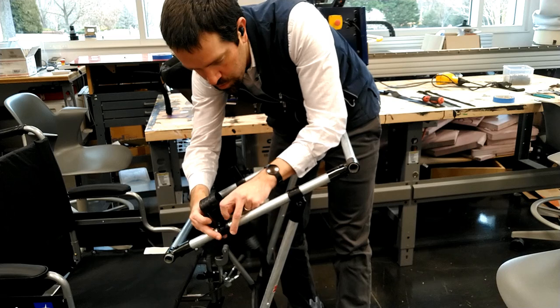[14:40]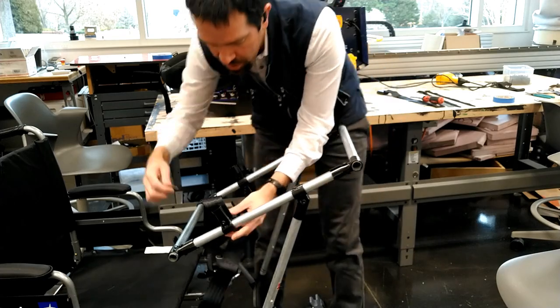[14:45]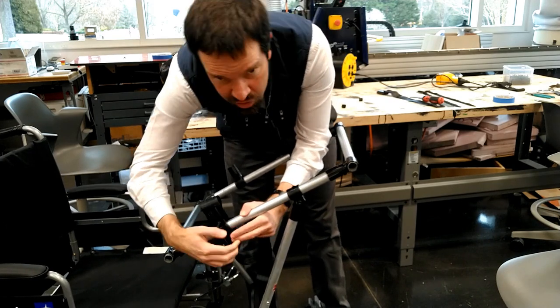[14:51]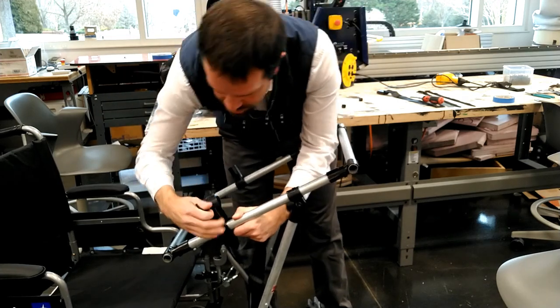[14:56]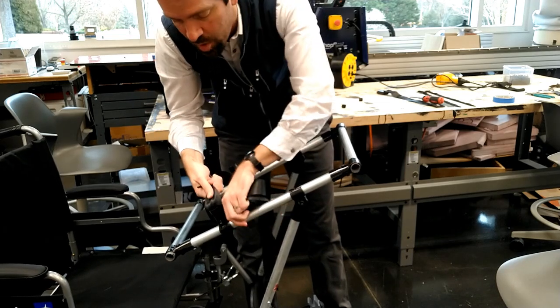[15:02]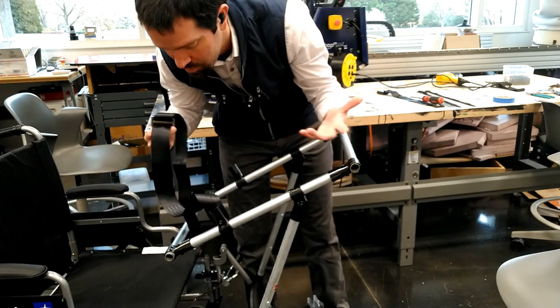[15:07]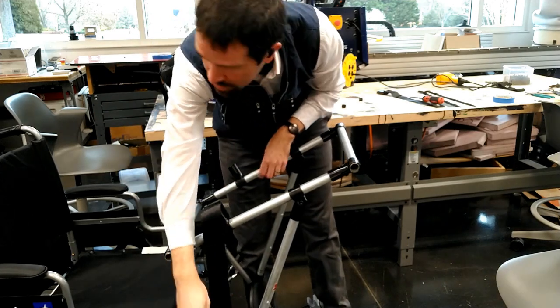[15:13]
I'm going to take the belt, align it properly, and I'm going to slide that down into that maker pipe as far as it'll go. And then I'm going to crank this down as tight as I can make it. And those two pieces of maker pipe will get tighter and tighter and sandwich the seat belt right in between to the point where I cannot pull it out. Now, obviously, this is not a car crash secure seat belt, but it is keep-the-thing-in-place secure.
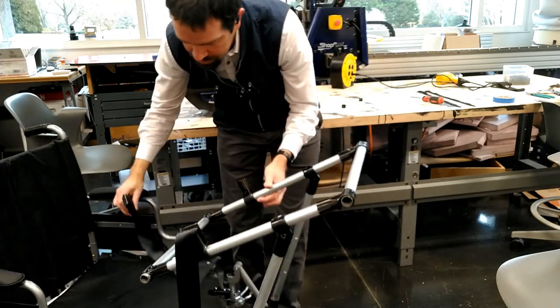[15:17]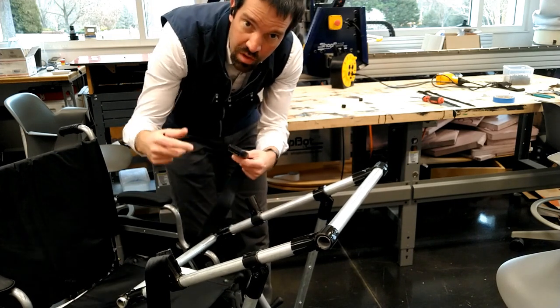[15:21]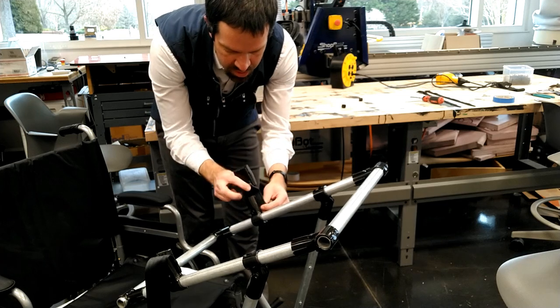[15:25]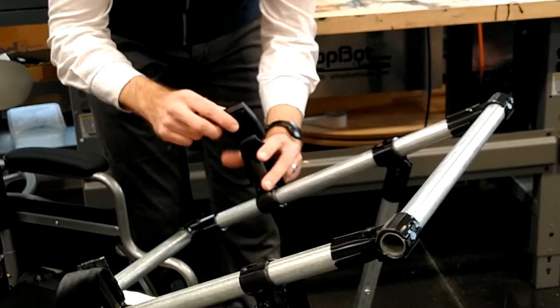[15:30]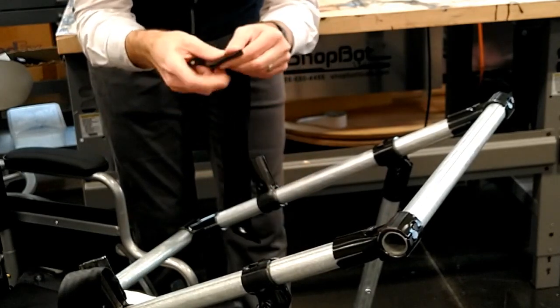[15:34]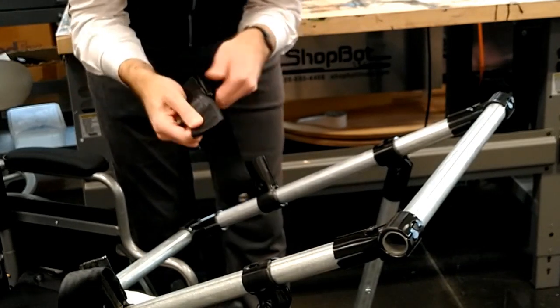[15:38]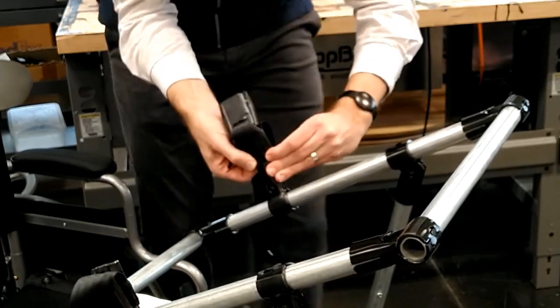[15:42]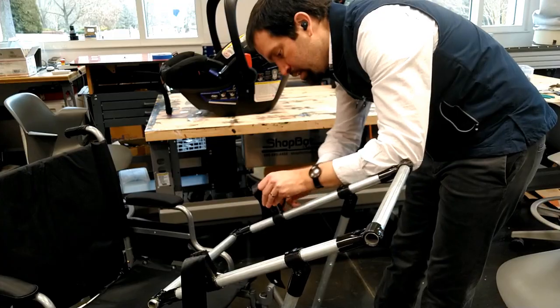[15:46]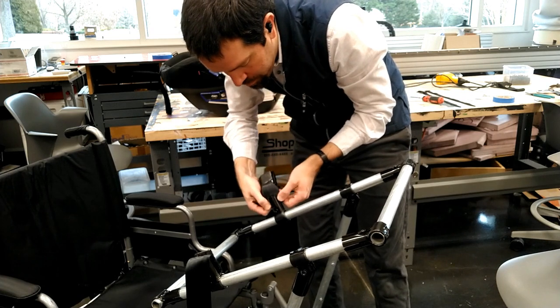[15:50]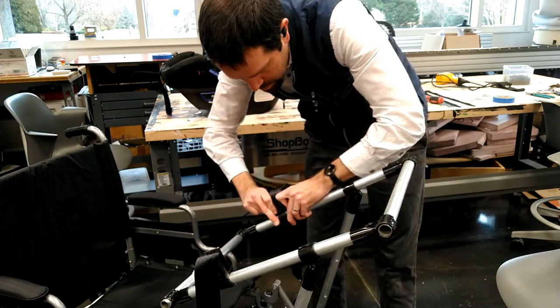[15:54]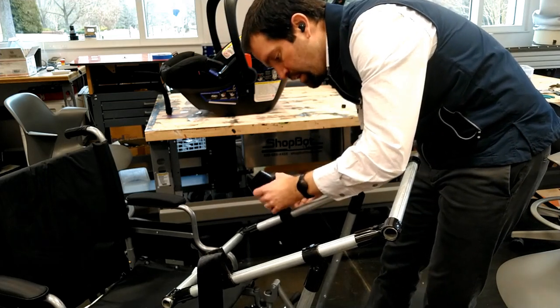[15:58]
On the other side, this is where I have the actual buckle of the seatbelt. I want to get this buckle as close down in as possible so that it doesn't interfere with that belt path, and we'll see that in just a minute. So what I'm going to do is fold the seatbelt right at the base of this sewn area, and that's what I'm going to shove in. I may need to loosen my maker pipe a little bit to get that in there, but I'm going to shove that in. Get it in there as deep as possible again. And then I'm going to crank down on that maker pipe.
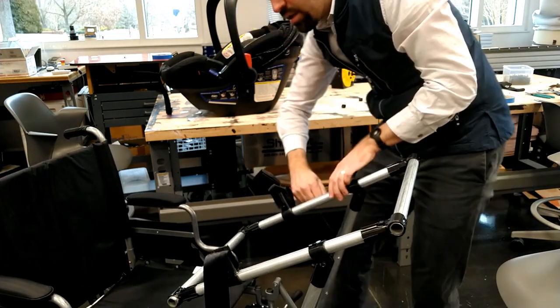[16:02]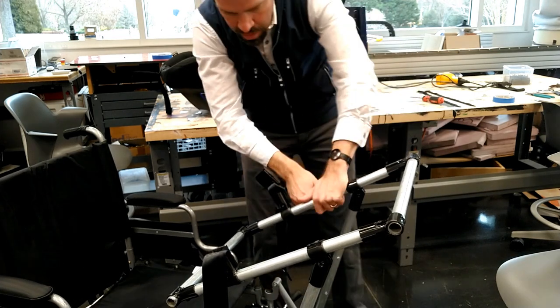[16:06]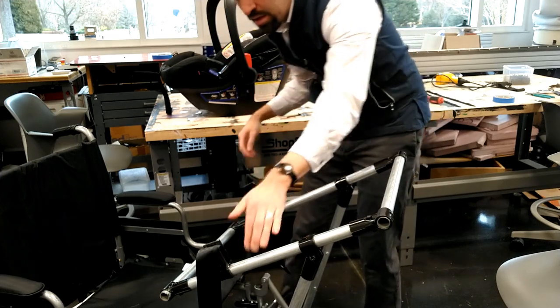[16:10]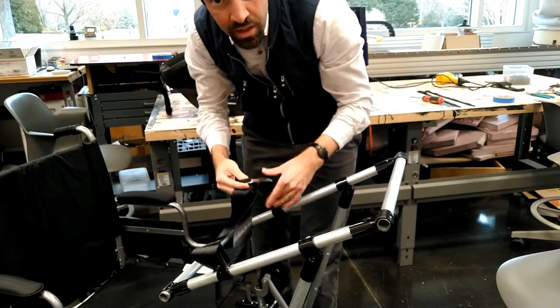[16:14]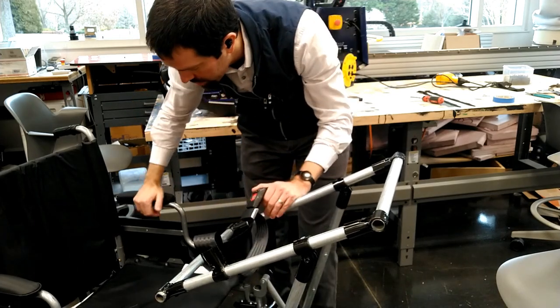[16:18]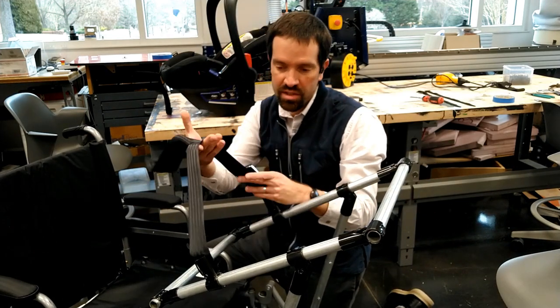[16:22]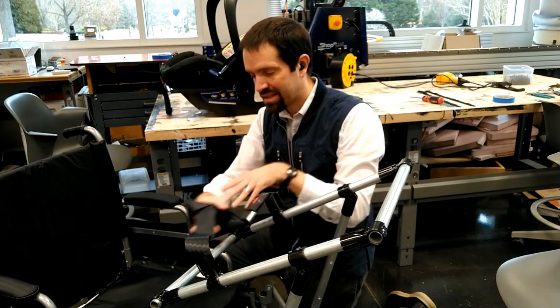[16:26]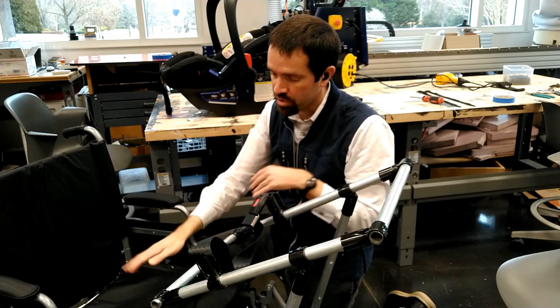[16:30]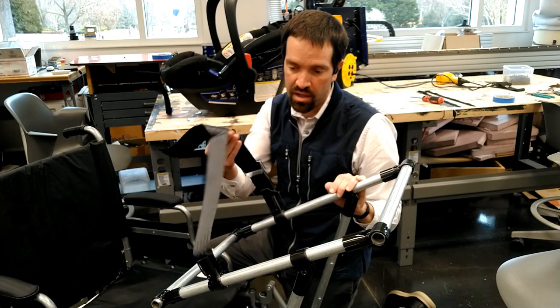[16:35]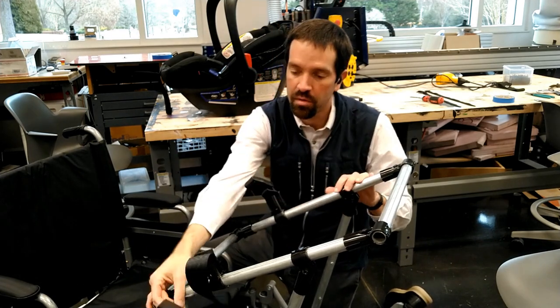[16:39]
And now I have a seatbelt. Now this is not the seatbelt that's going to hold the child into the infant car seat. The infant car seat has its own seatbelt buckles for that. This is going to simply keep the infant car seat from maybe bouncing up and sliding forward. Again, if it does slide, it's going to slide towards the person in the wheelchair. So that's good. However, this is going to provide a lot of stability and keep that infant car seat from going anywhere. So let's try.
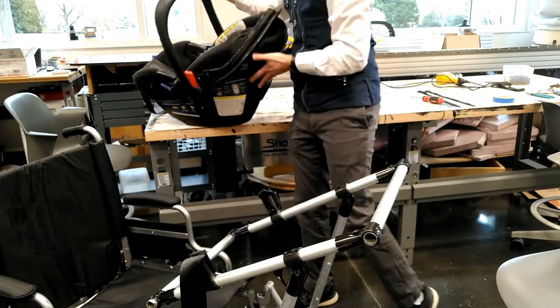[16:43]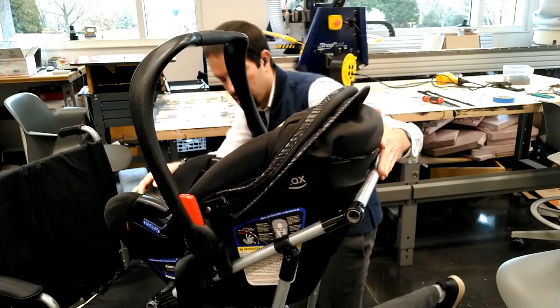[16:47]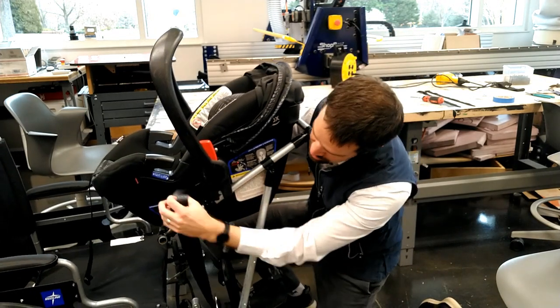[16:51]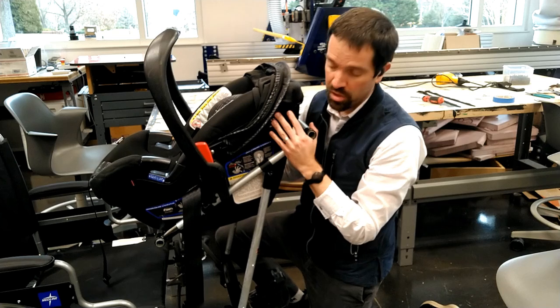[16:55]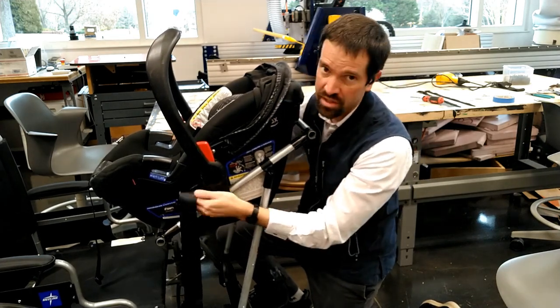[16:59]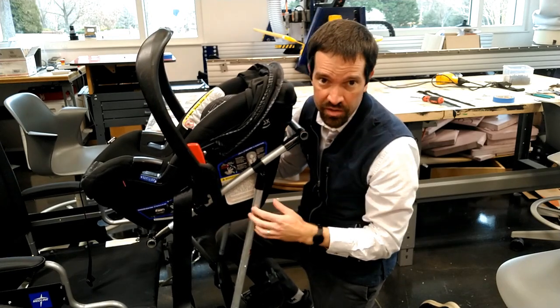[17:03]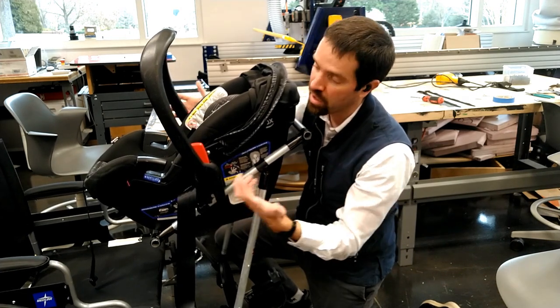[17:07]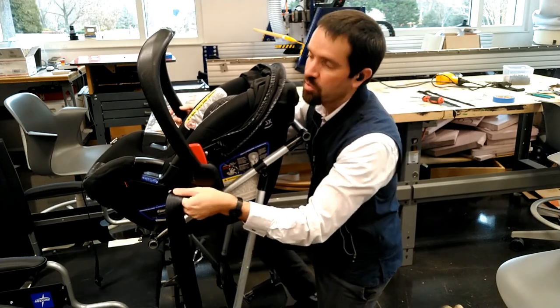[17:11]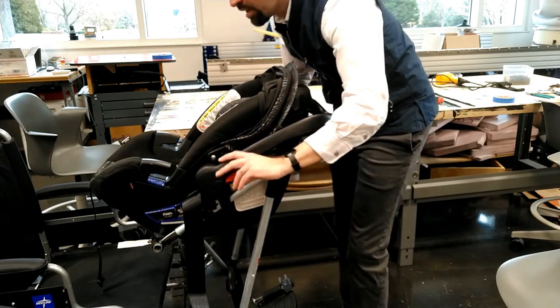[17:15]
Having these also helps the user know where this should go, which puts it in the proper alignment so that we keep our line level. We don't want to tilt our child too far forward so that their head is flopping forward on those flimsy newborn necks. We want it to be staying tilted backwards as much as possible without it being uncomfortable for the user.
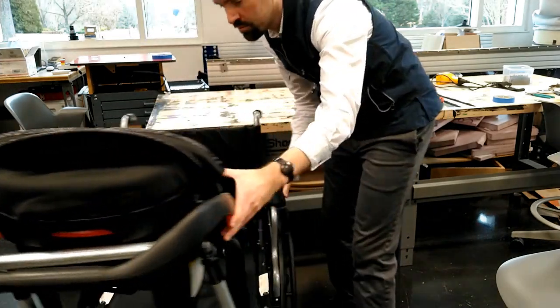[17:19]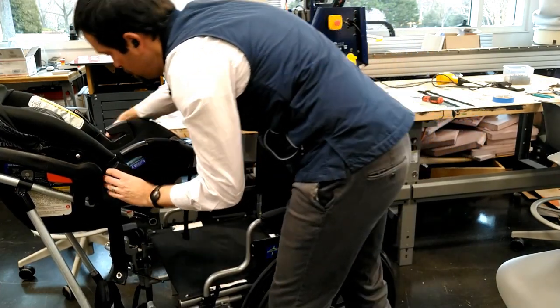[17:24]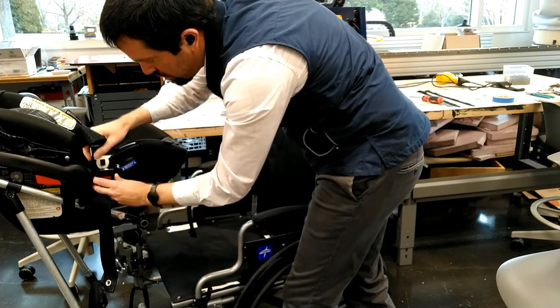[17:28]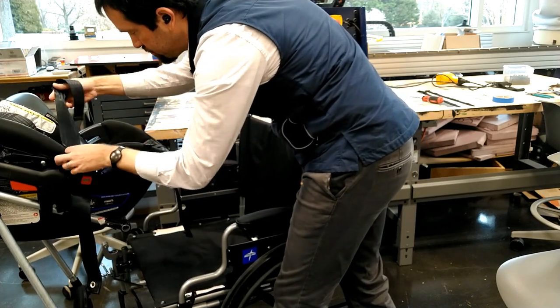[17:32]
Now, flip this around. Here's our seatbelt, our seatbelt buckle. We just slide that through the belt path, buckle it in, and pull it tight.
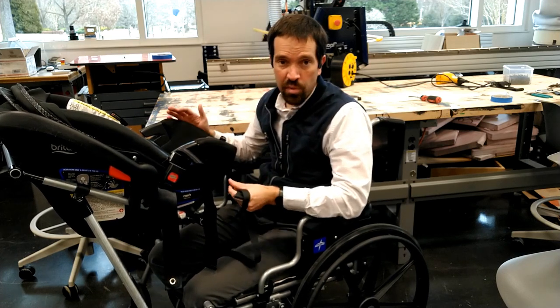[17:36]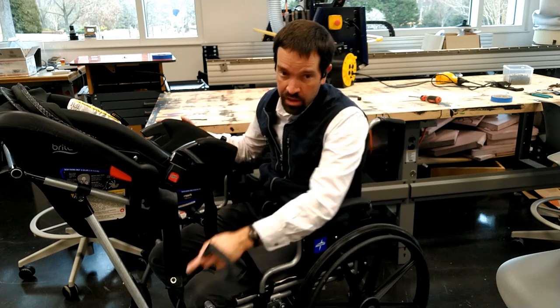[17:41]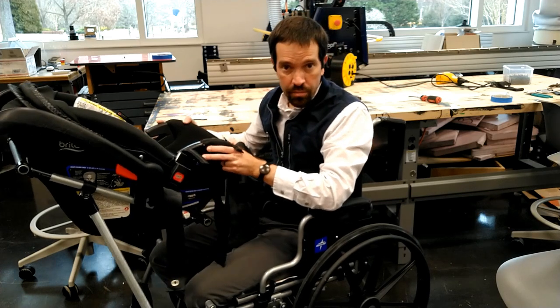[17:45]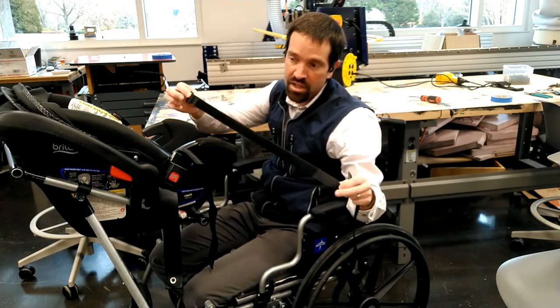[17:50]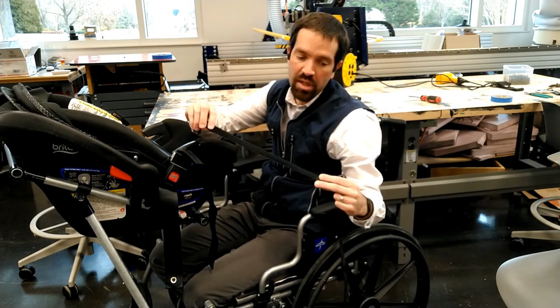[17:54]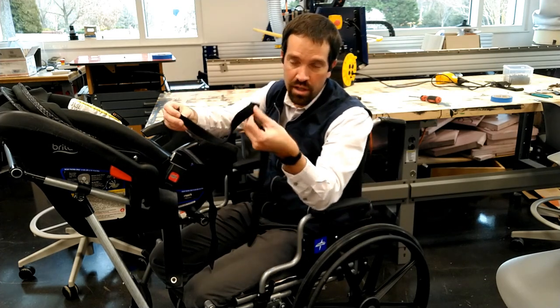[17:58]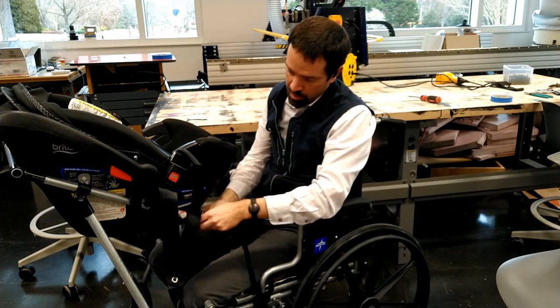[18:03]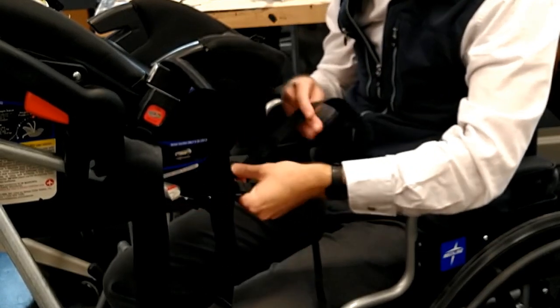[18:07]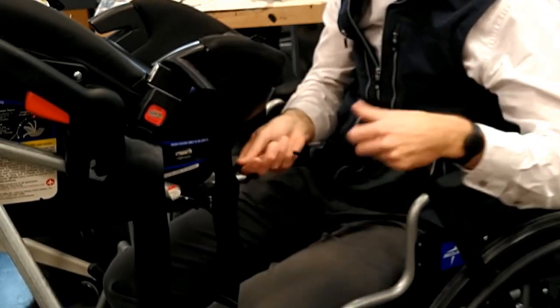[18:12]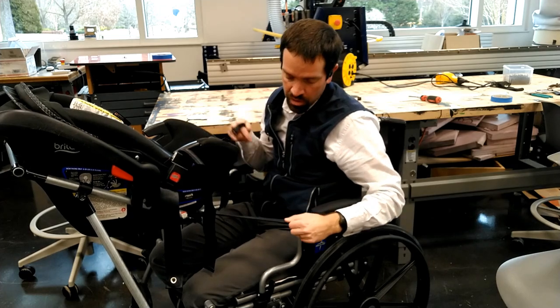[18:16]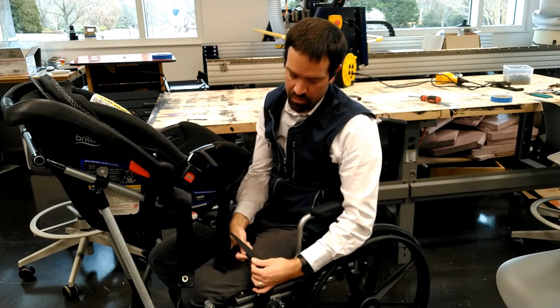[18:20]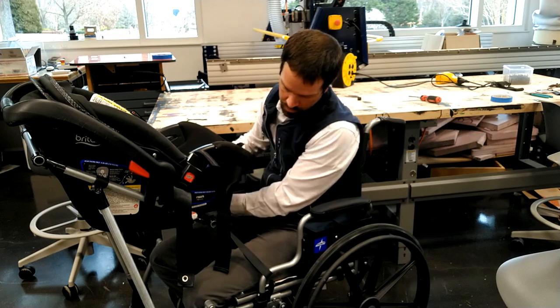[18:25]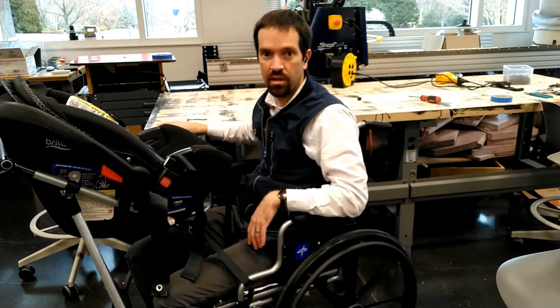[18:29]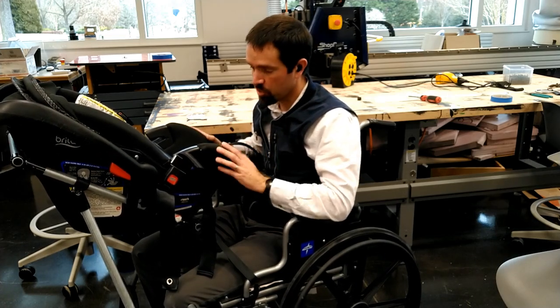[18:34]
So the next safety mechanism, as you can see, because we put a half inch piece of conduit inside of a 3/4 inch piece of conduit down at our connection point here, it's got some wobble to it. So in order to reduce that wobble, we bought these 18-inch Velcro cable loops. They have the loopy end on most of it, and then you can stick the Velcro on the other end. And they've got this little clip on the back. So what I'm going to do is feed this through the bottom belt, and essentially I'm going to do that on both sides. We're just going to pull it tight towards us and loop it around the wheelchair itself. That will keep this much sturdier, much more stable, with a lot less wobbliness into it.
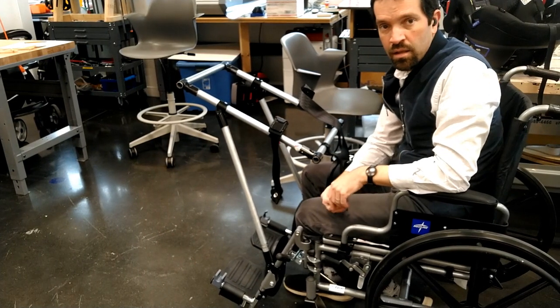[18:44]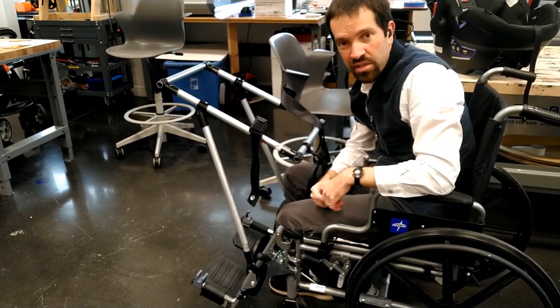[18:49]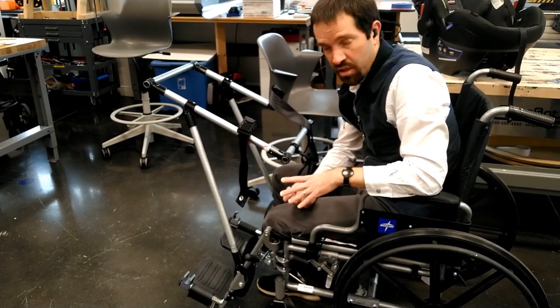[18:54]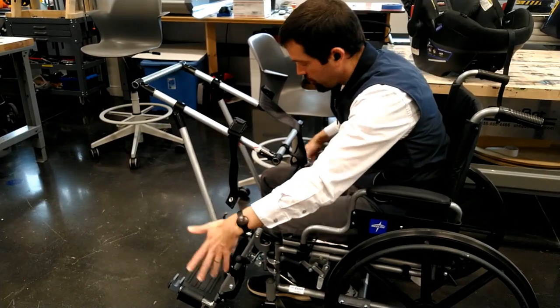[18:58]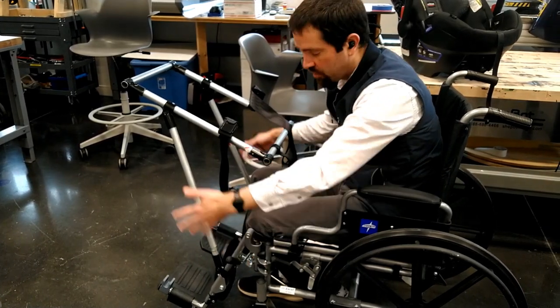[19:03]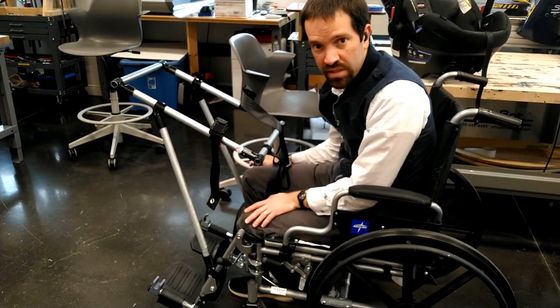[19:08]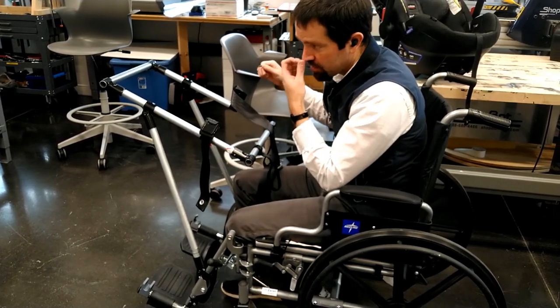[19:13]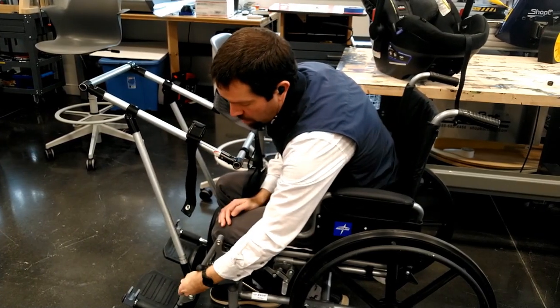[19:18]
So now that we have all of the structure and we've got all the safety mechanisms attached, what we're going to do is have the ability to adjust everything. Different wheelchairs have different widths, different configurations of the leg. A lot of them don't have these adjustments for somebody with a, you know, broken leg that needs to keep their leg out. So there's all sorts of ways that this can be adjusted. People are different sizes, different heights. And so the adjustments that can be made are, one, you can loosen up all of these attachments.
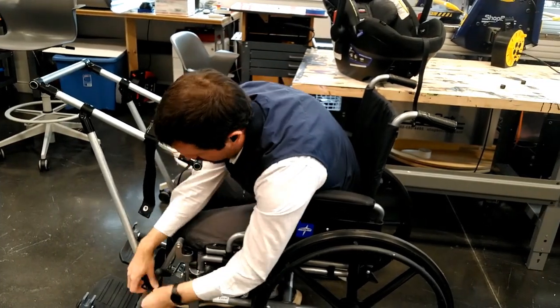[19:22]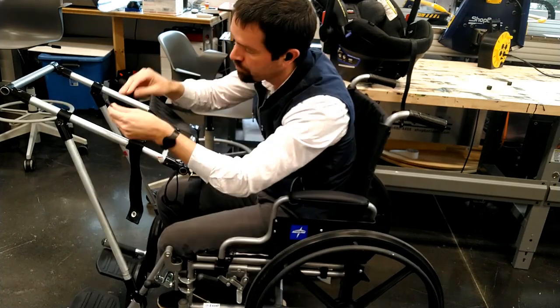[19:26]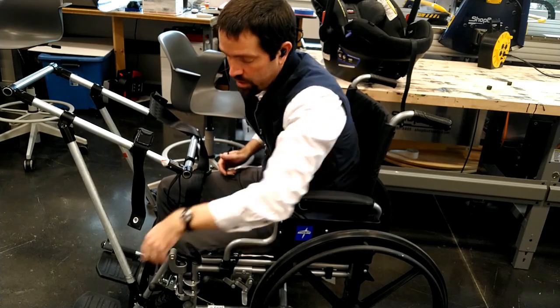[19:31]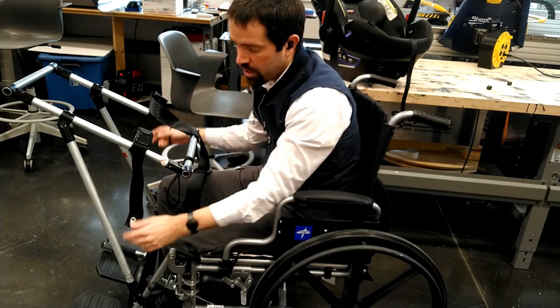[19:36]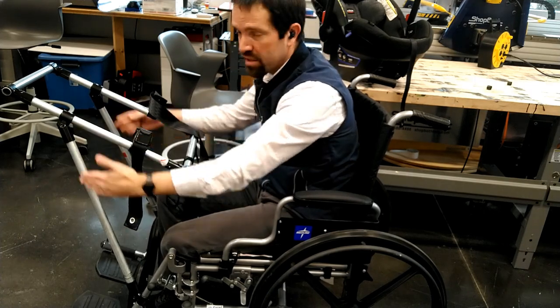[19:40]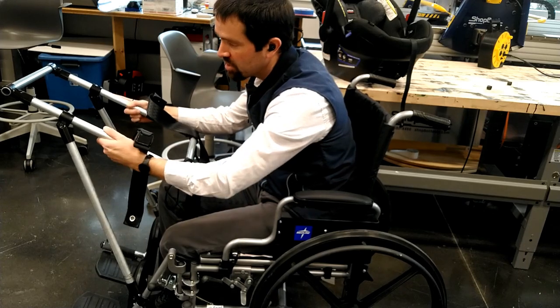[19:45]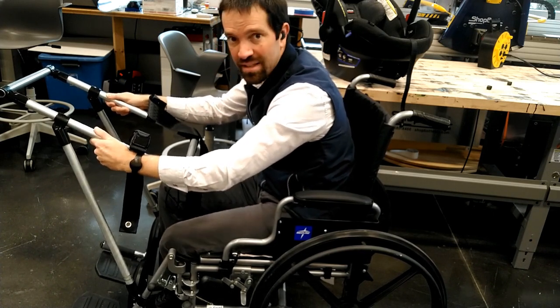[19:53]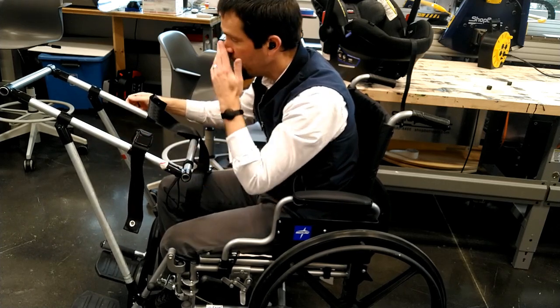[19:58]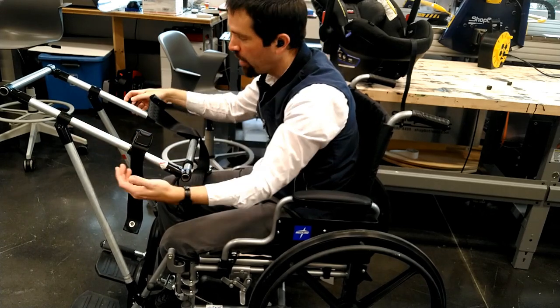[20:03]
So the first adjustment point is these attachment points on the footrest. A narrower wheelchair is going to need to have these be able to swivel a little bit more forward so that these legs aren't angled quite as much in. So loosening that up and getting that adjustment is important. When I loosen that up and I loosen these up, then I can actually shift this a little side to side, because I want to get it aligned to the middle of the wheelchair. And loosening these up also allows the main frame here to move forward and back to accommodate different leg rooms.
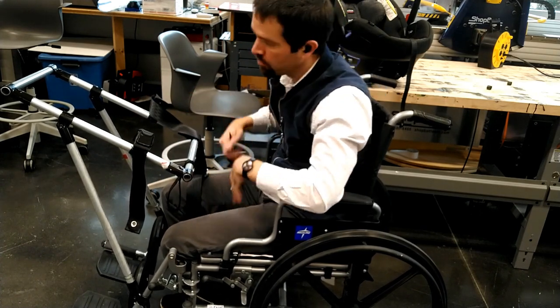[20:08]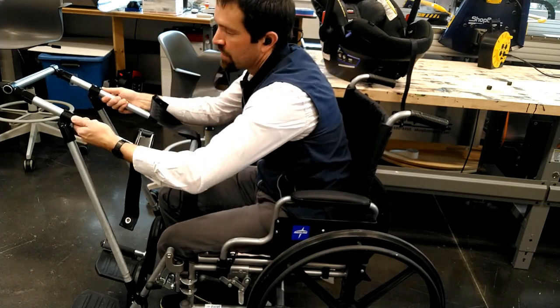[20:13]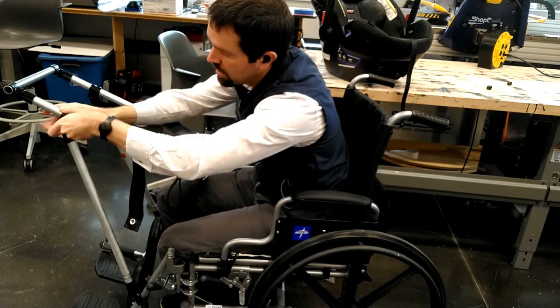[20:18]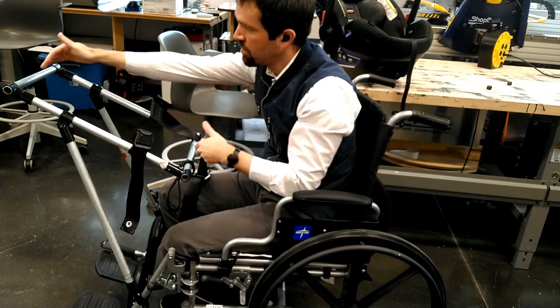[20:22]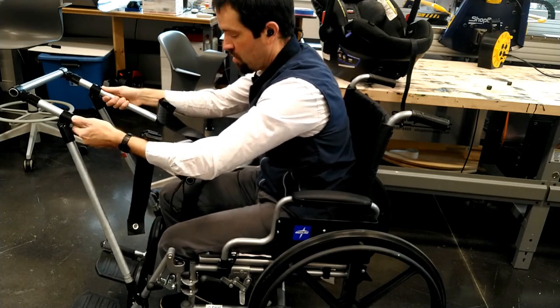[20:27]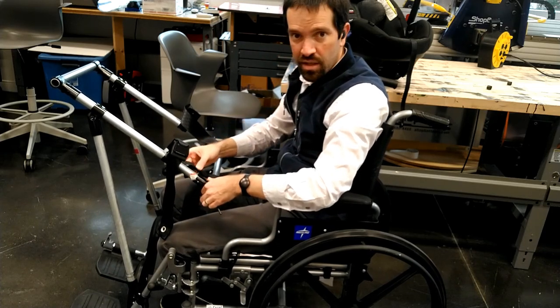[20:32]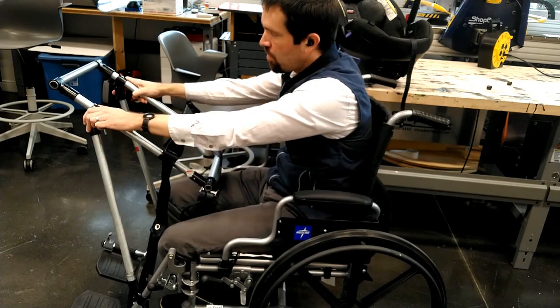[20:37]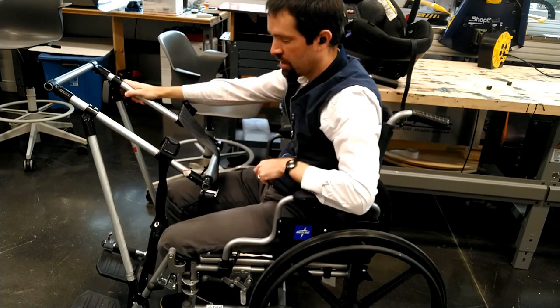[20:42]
I have lots of leg room right here. So if I wanted the child to be a little bit closer to me, then I could loosen these up and I can work this frame towards me. And as long as these supports stay in relation to the back and the front, the infant car seat will fit just fine. I can move this all the way to the back if I wanted to, knowing that we're going to pull this using the cable loops towards us. So that's all a matter of how comfortable we are with different configurations.
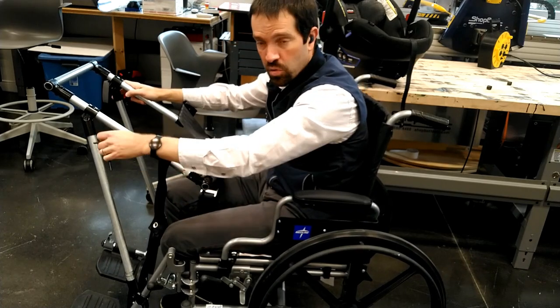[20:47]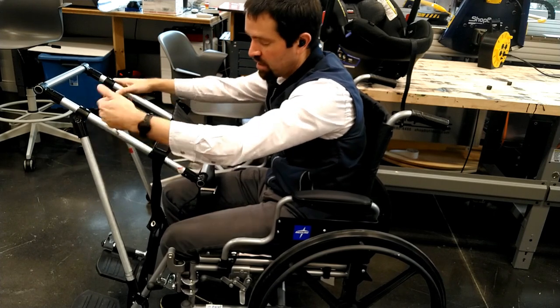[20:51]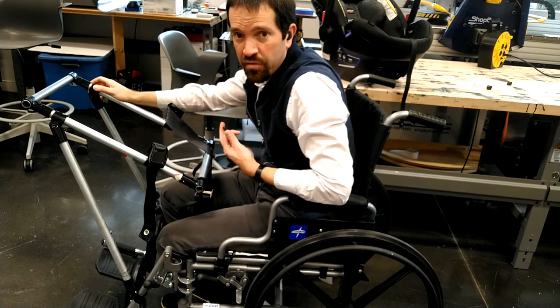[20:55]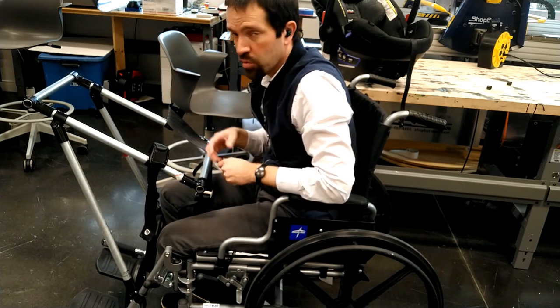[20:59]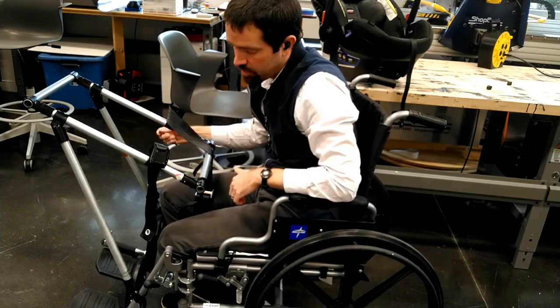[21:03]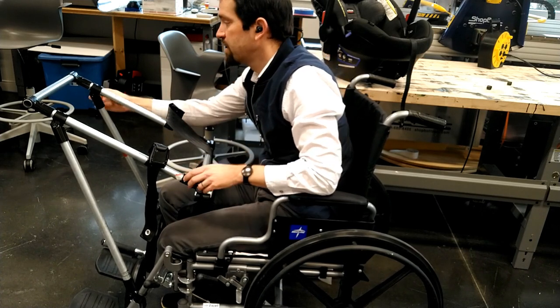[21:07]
Getting it looking the way that we want. And we can also, of course, if we want this to be shorter, cut some from the top of these legs, and that'll lower it down. So once you've found a configuration that feels comfortable to the user, as well as seems to work for the infant car seat, then you can just lock everything down as tightly as possible so that there's no wiggling as you're using the device, and then it's ready to go.
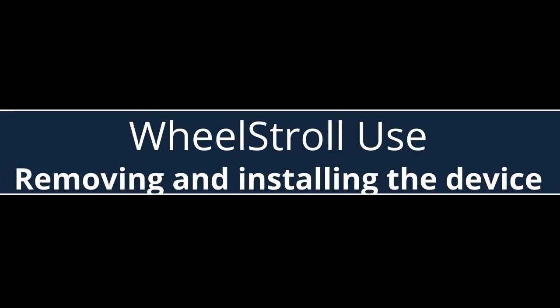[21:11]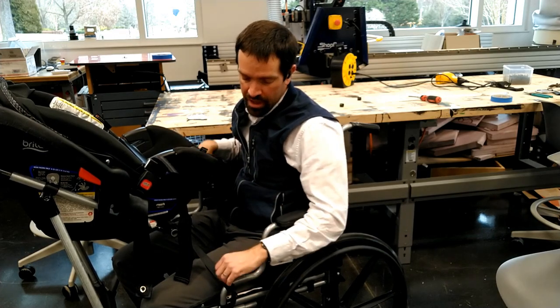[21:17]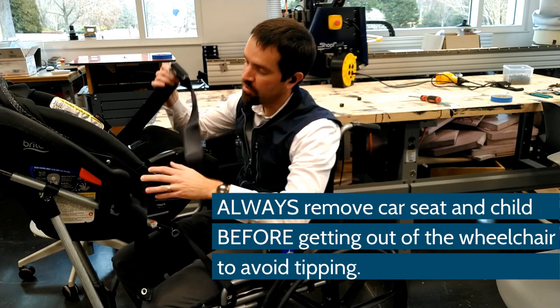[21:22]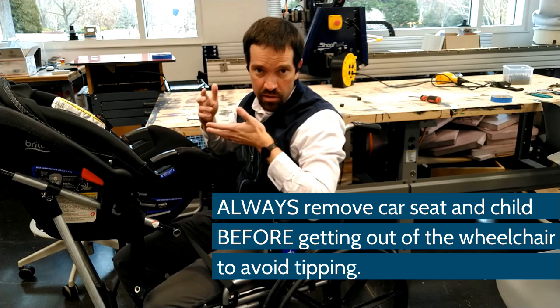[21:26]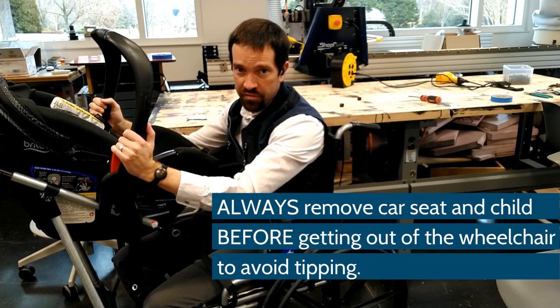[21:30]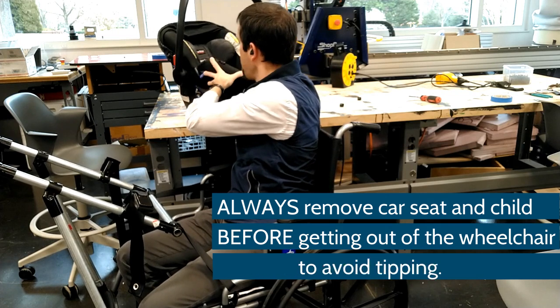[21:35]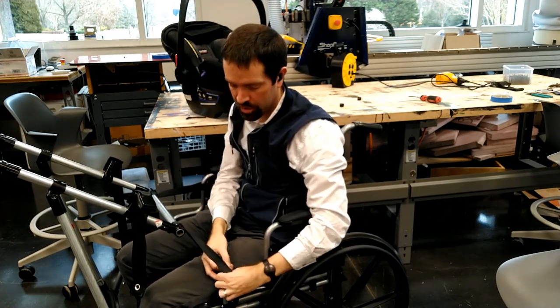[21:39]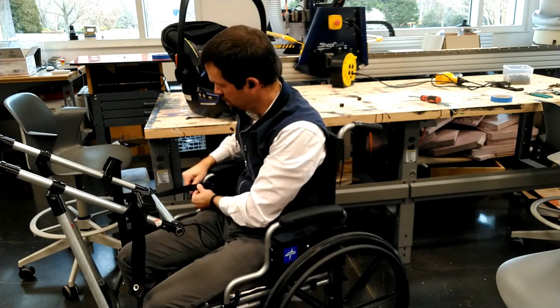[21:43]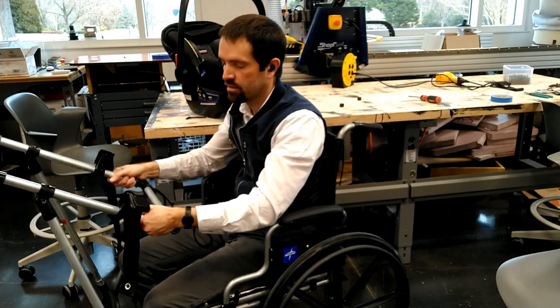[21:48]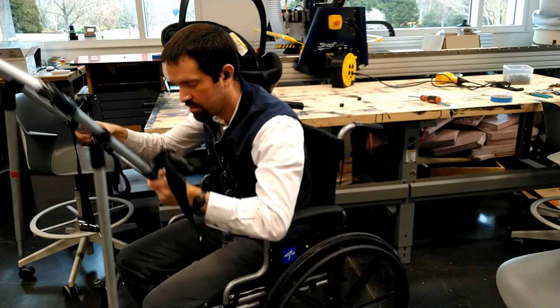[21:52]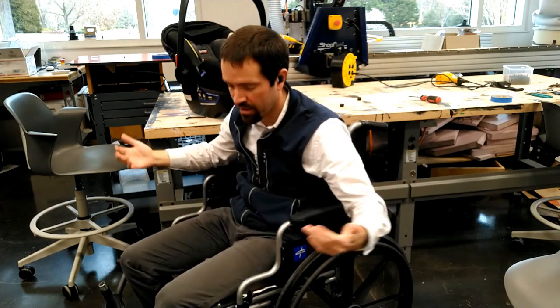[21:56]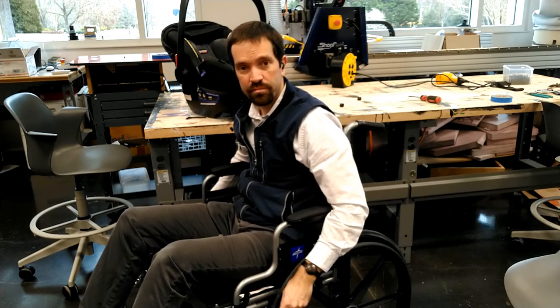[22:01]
Sitting in the wheelchair, I can easily remove this by unbuckling the infant car seat. I could either remove my child, hand him off, or I could lift the whole car seat and set it aside securely. I can undo my belt loops here and just stick those on there, and take that away and set it all out of the way. And now I have my wheelchair back the way it was originally. Reverse that process and you're off to go.